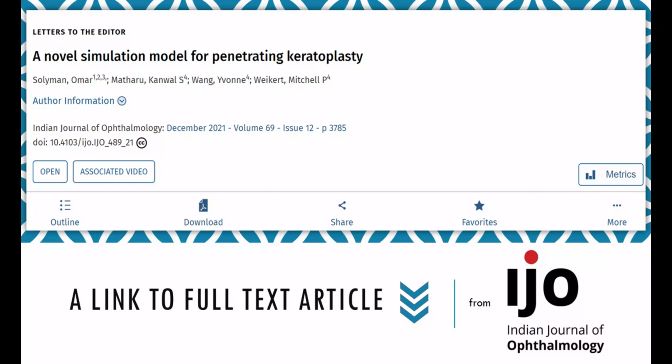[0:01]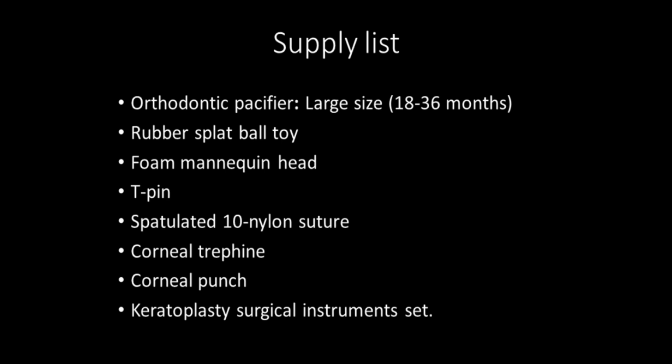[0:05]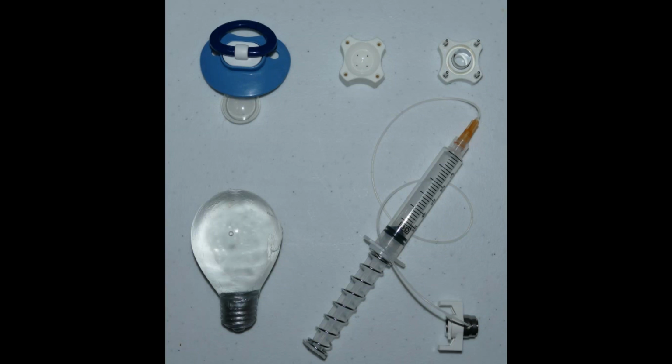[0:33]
The materials used here were chosen after experimentation with multiple objects of varying compositions. We will describe the setup, technique, and strengths and weaknesses of this simulation. The supplies are a large orthodontic pacifier and rubber splat ball toy, a mannequin and T-pin, a 10-0 nylon suture, corneal trephine, donor punch, and a standard keratoplasty surgical set.
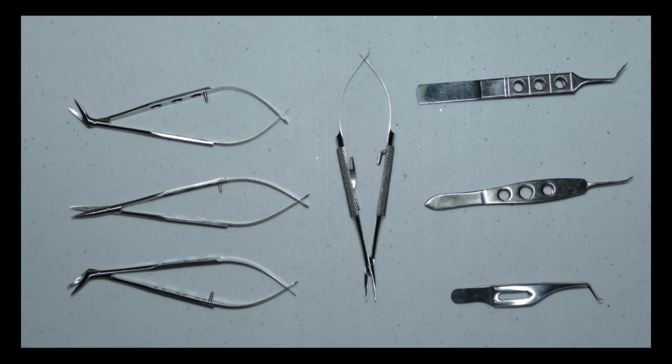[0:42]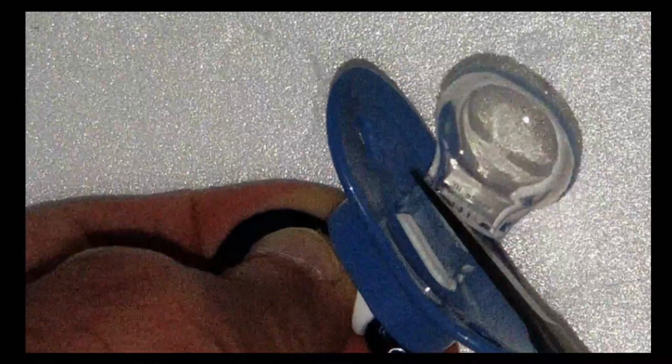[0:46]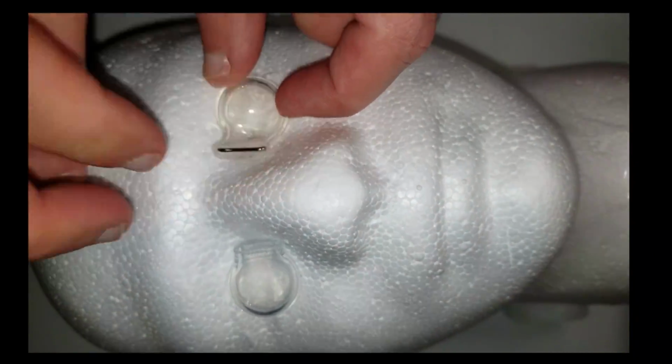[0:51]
First, from the pacifier, remove the nipple. Use a T-pin to secure this to the foam mannequin. This represents the recipient cornea.
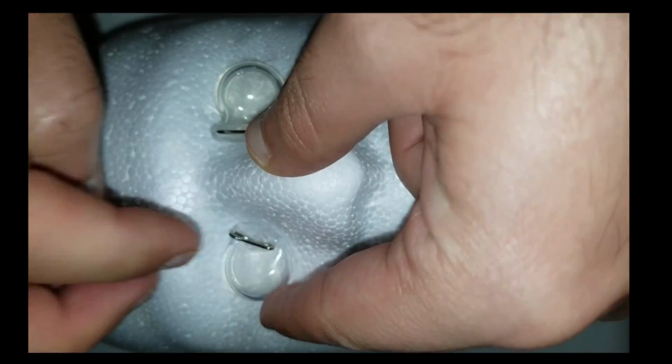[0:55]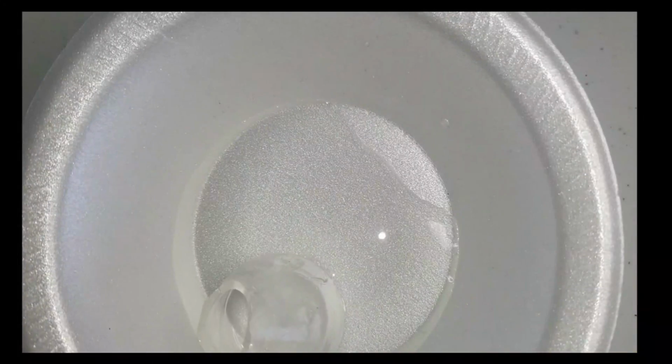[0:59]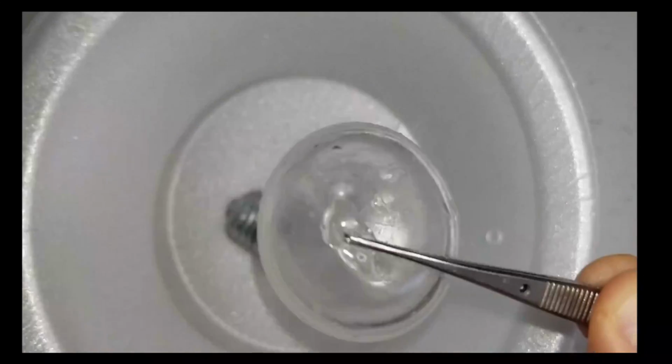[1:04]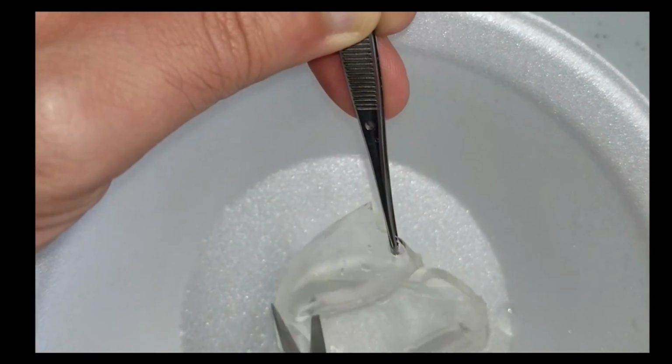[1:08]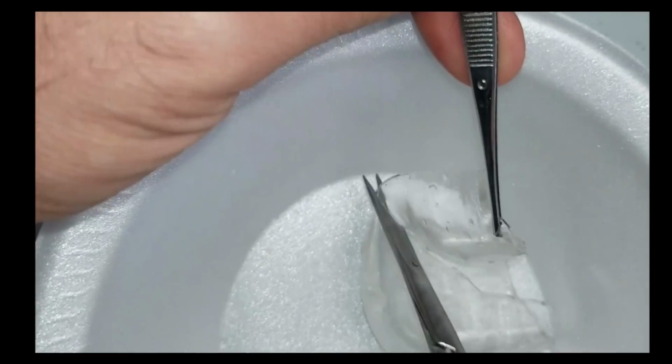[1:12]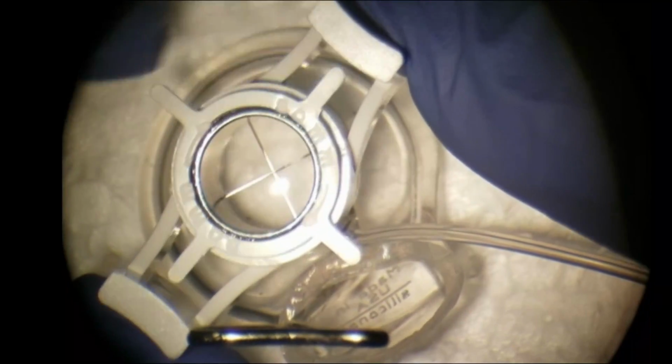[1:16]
Next, to prepare the donor cornea, cut open the splat ball toy and isolate a section which will serve as the source for the donor cornea. The vacuum trephine of any size can be used to trephinate the pacifier.
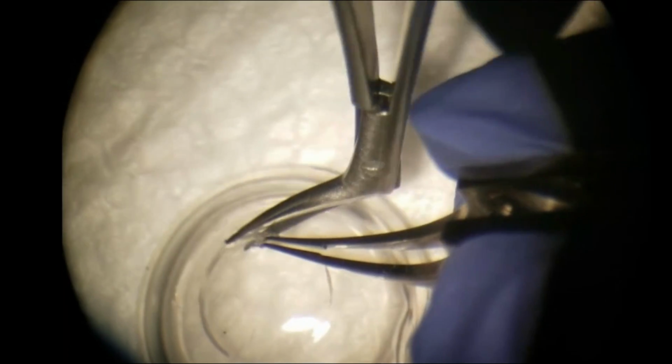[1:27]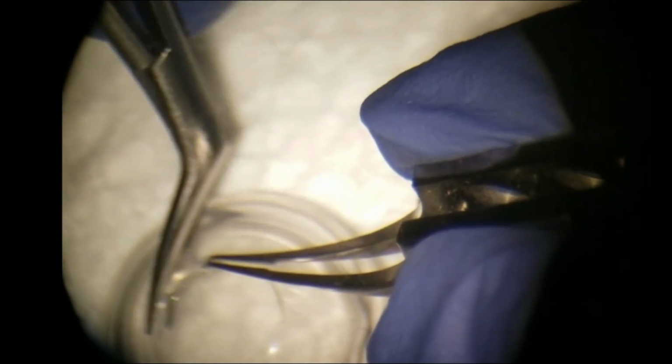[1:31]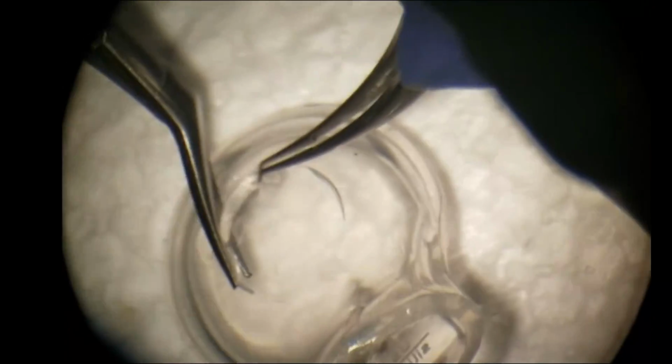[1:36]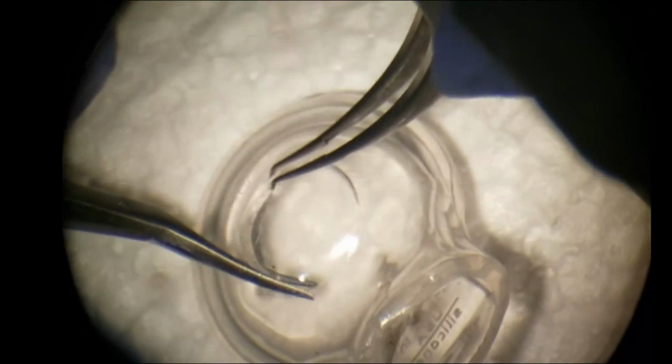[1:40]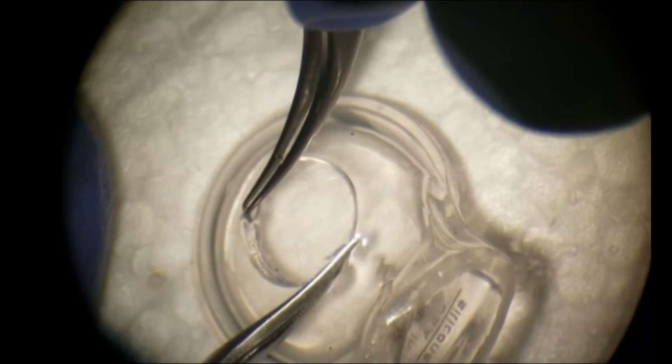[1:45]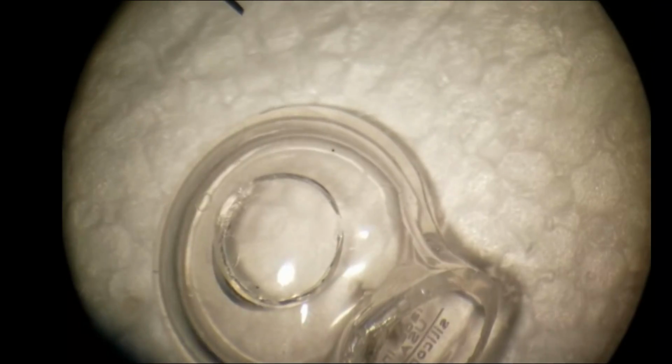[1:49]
The anterior chamber can be entered using a super sharp blade or Vannas scissors. The host button can be removed using curved corneal scissors to the left and the right. This model allows the trainee to practice holding the scissors perpendicular to the cornea.
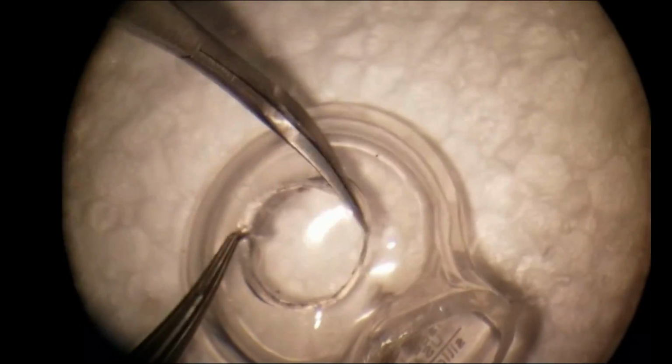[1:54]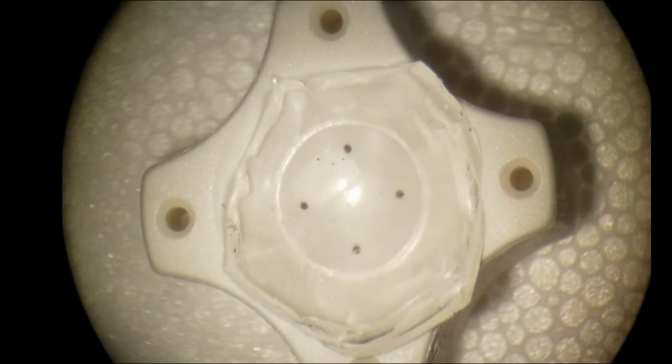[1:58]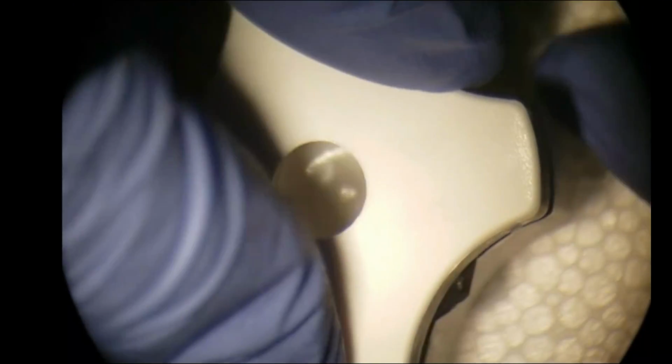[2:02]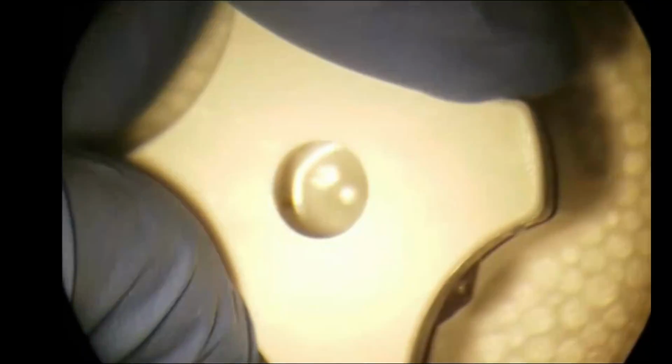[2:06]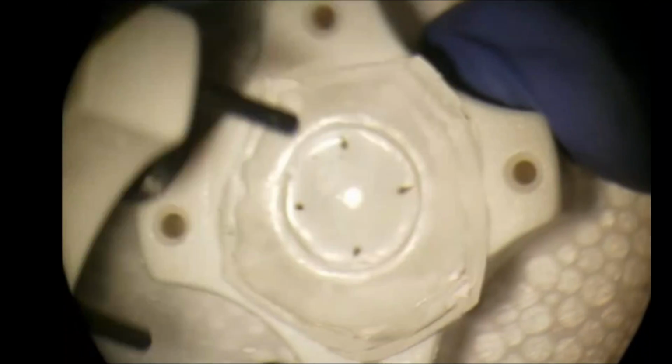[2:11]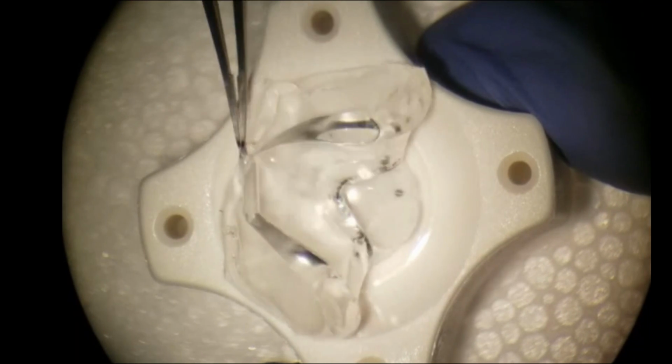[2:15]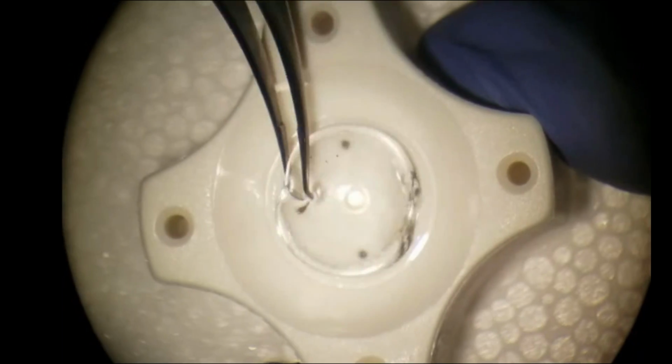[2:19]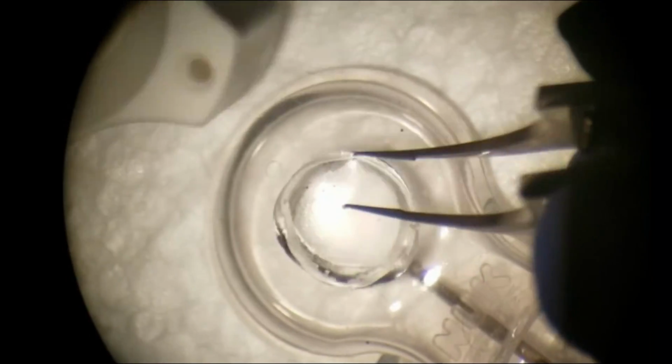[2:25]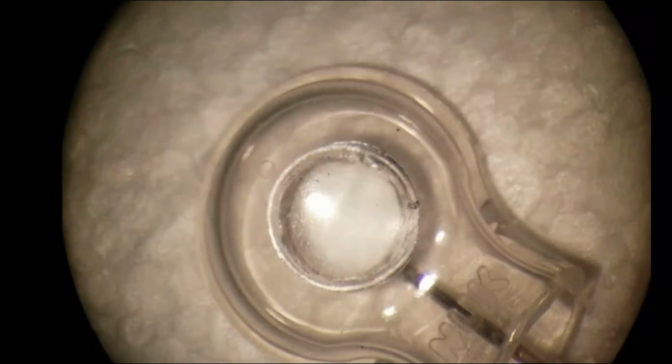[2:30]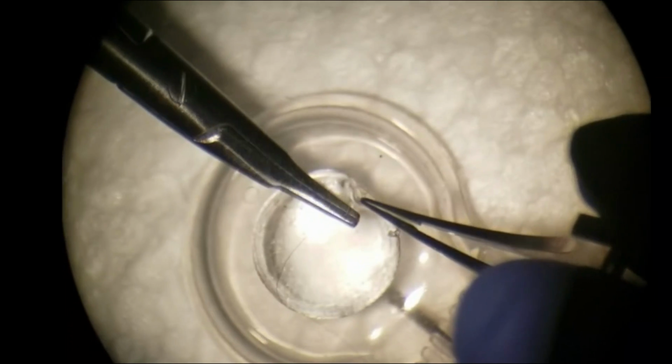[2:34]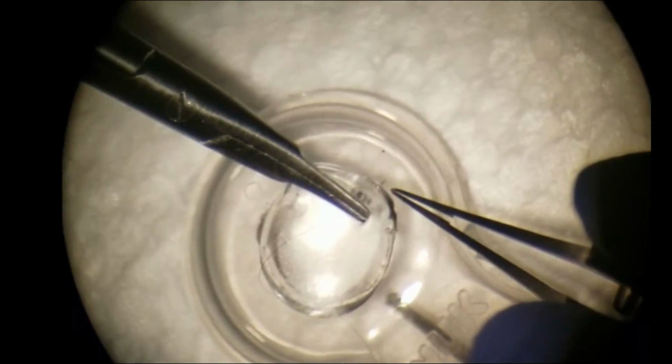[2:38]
The piece of splat toy that acts as the donor cornea can be marked and prepared like real tissue. Next, the splat toy button can be sutured to the trephined pacifier. A 10-0 nylon suture can be passed through the material, similar to corneal tissue.
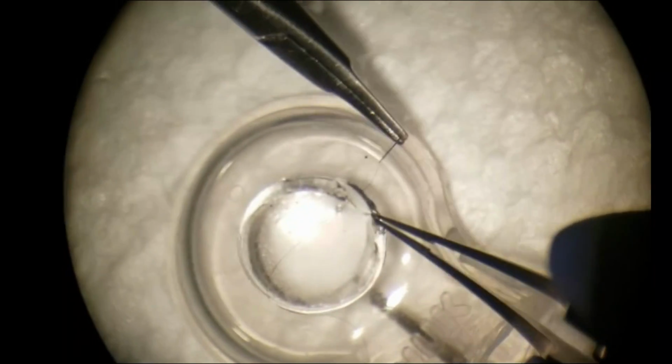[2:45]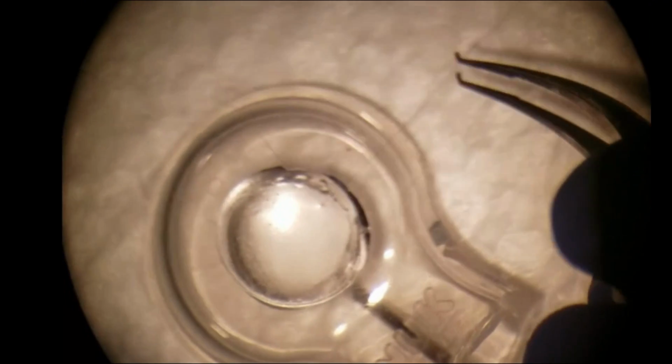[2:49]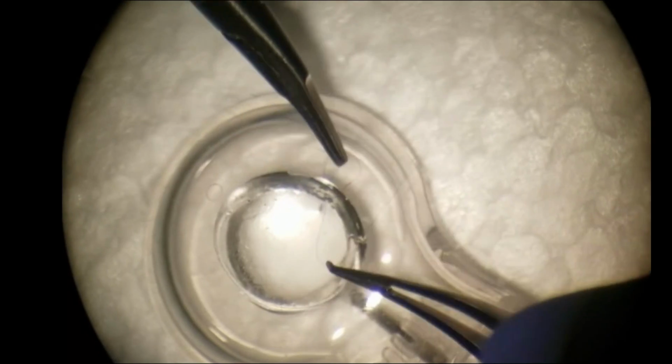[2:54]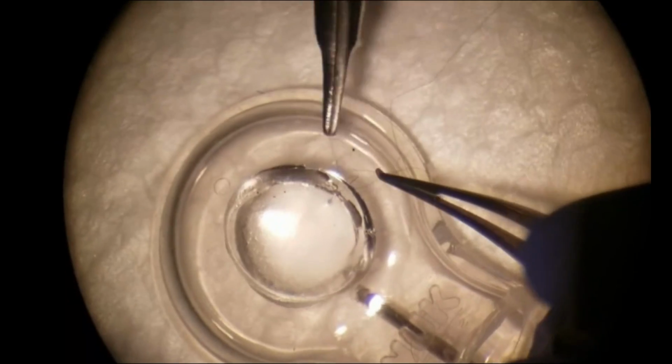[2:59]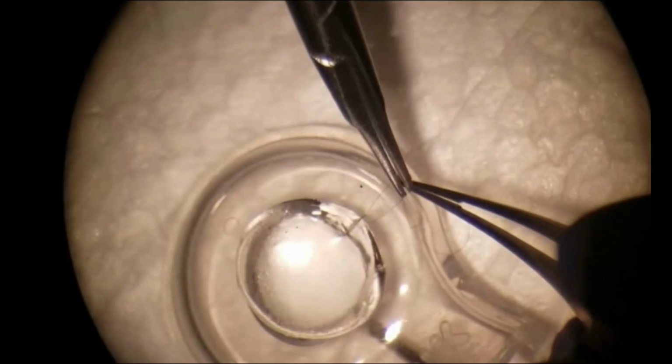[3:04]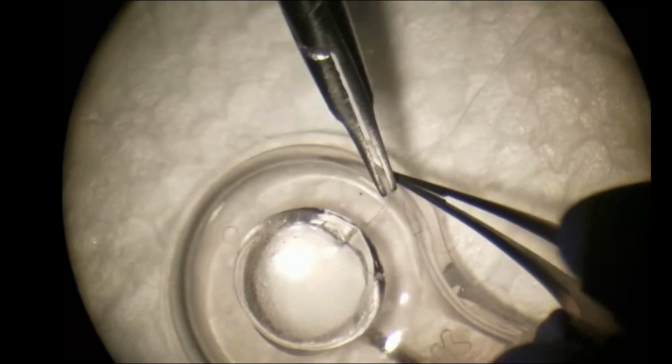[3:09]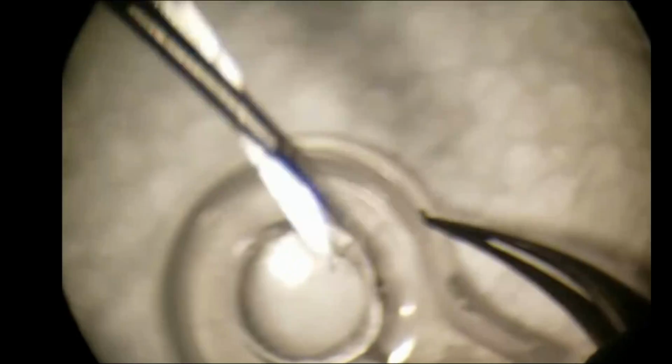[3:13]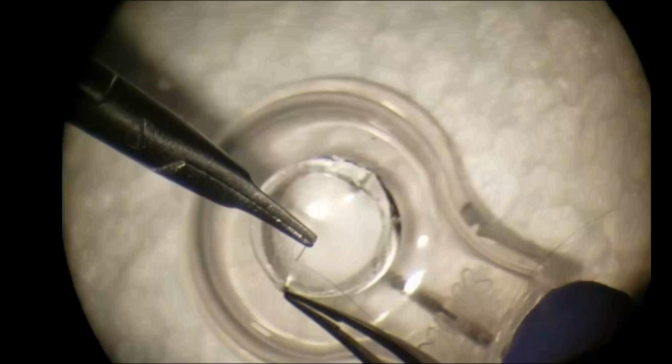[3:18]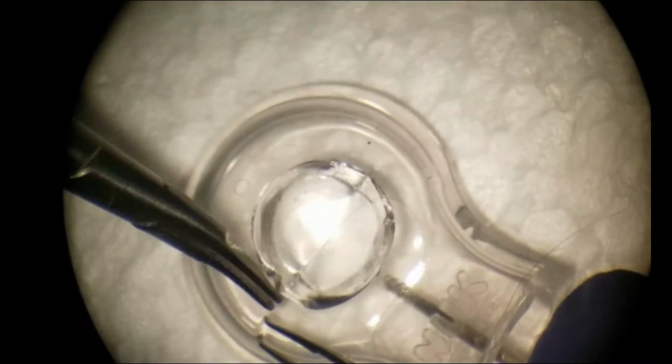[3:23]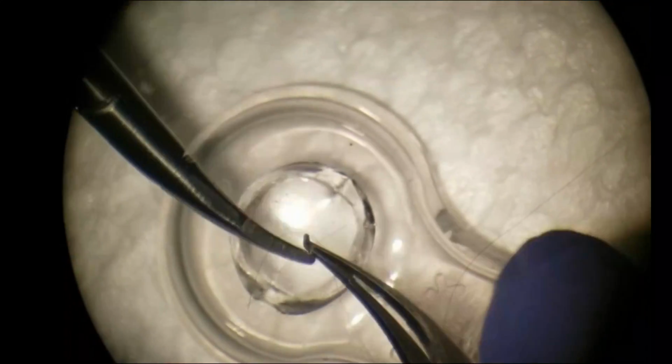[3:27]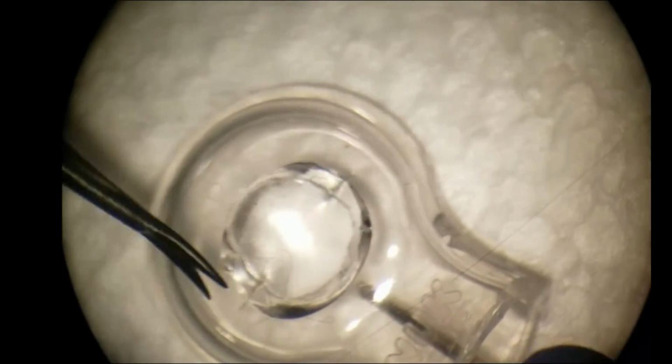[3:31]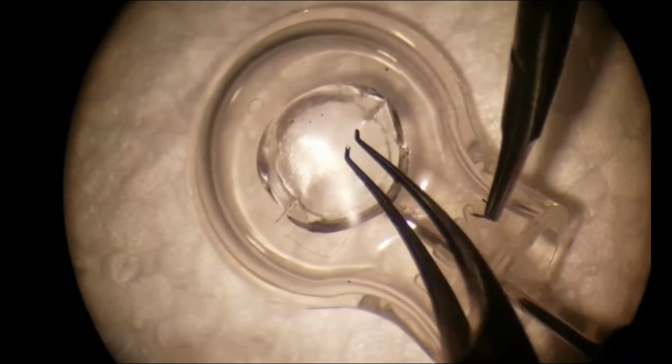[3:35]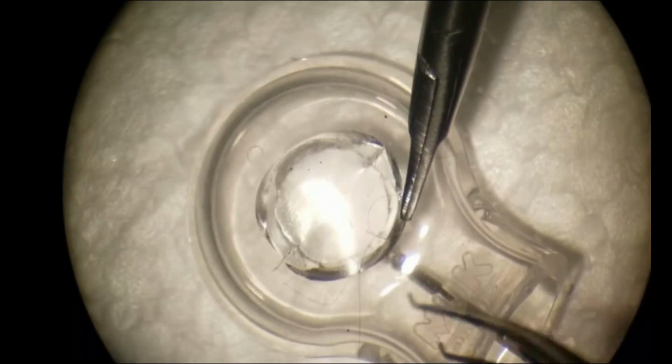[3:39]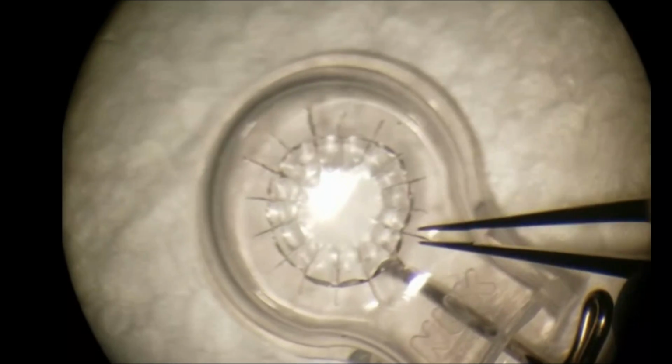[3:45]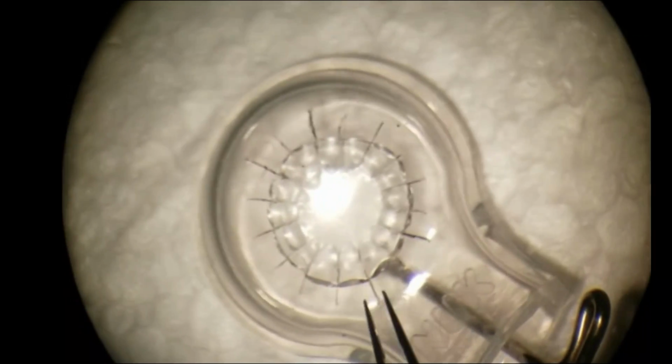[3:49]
The clear tissue allows for the trainee to evaluate suture depth and length. It is also particularly valuable for evaluating if the passes are radial, which is one of the most difficult parts when learning PKP. After all 16 sutures are tied, the knots can be buried into the material.
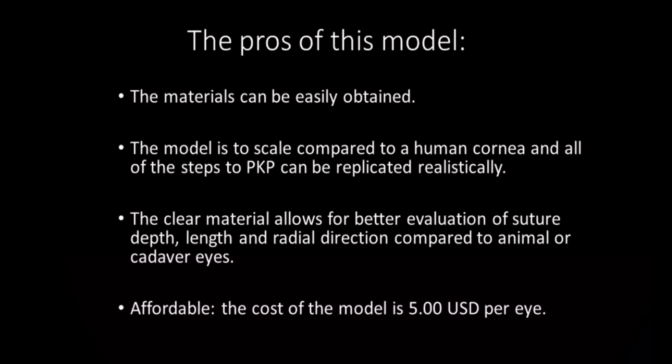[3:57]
The pros of this model are that the materials can be easily obtained. The model is to scale compared to a human cornea, and all of the steps to PKP can be replicated realistically. The clear material allows for better evaluation of suture depth, length, and radial direction compared to animal or cadaver eyes.
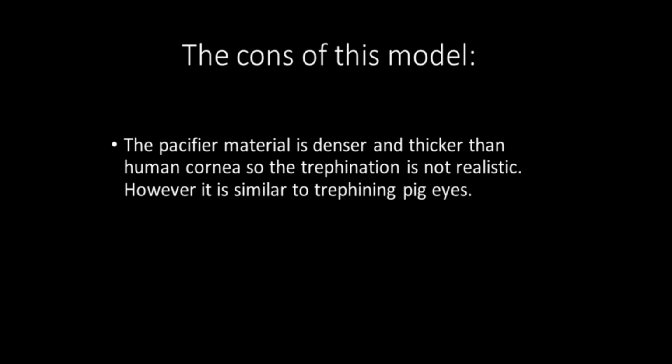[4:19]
The cons of this model are that the pacifier material is denser and thicker than human cornea, so the trephination is not realistic. However, it is similar to trephinating pig eyes.